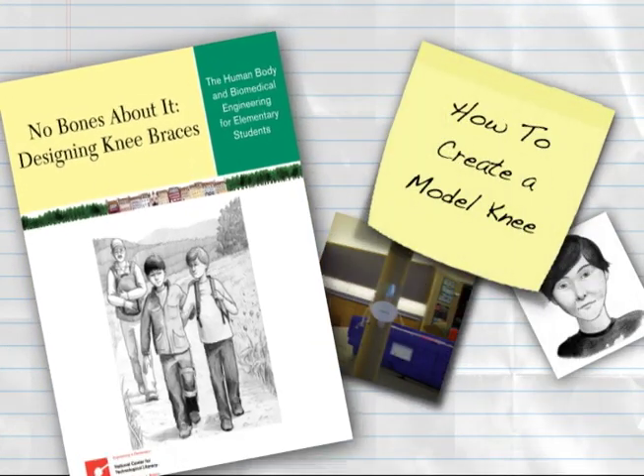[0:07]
This Engineering is Elementary digital how-to will demonstrate how to create the leg model for Lesson 3, Part 1 of No Bones About It, Designing Knee Braces.
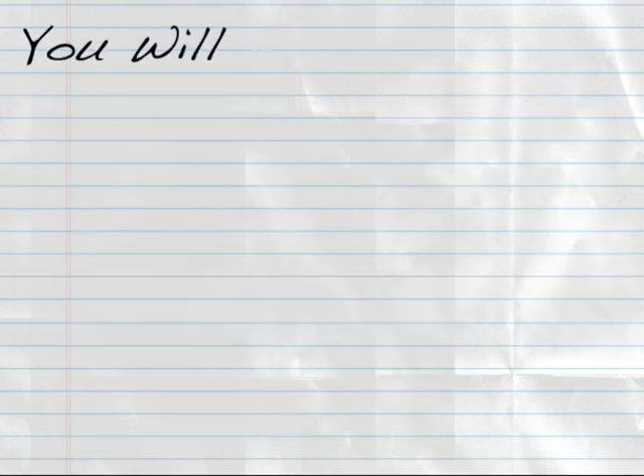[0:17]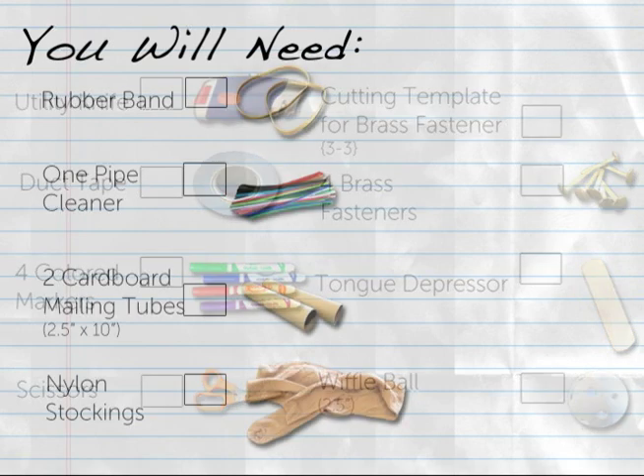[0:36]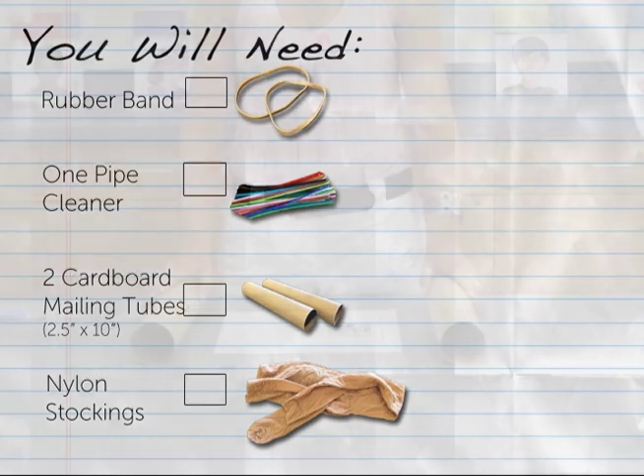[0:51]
For this how-to, you will need 1 utility knife, 1 roll of duct tape, 4 colored markers, scissors, 3-3 cutting template for brass fasteners, 4 brass fasteners, 1 jumbo craft stick or tongue depressor, a wiffle ball with a 2.5 inch diameter, 1 rubber band about 3.5 inches long when flattened, 1 pipe cleaner, 2 cardboard mailing tubes approximately 2.5 inches in diameter and 10 inches long, 1 knee-high nylon in a light color.
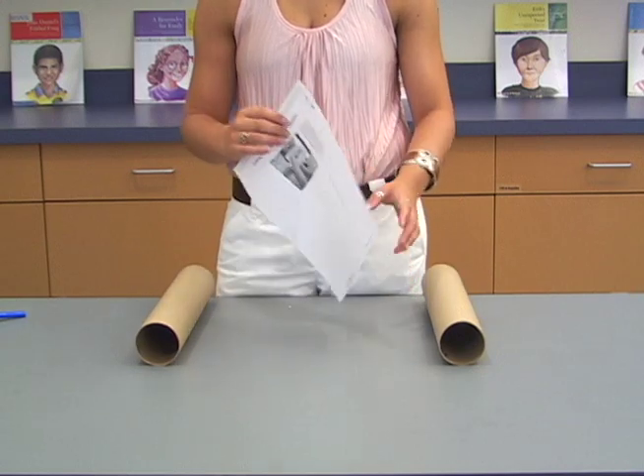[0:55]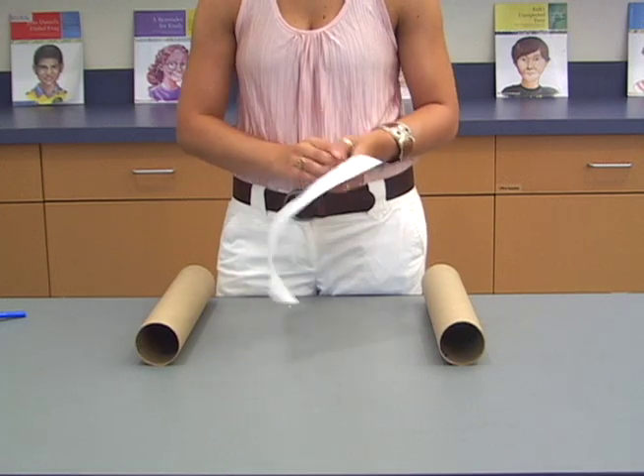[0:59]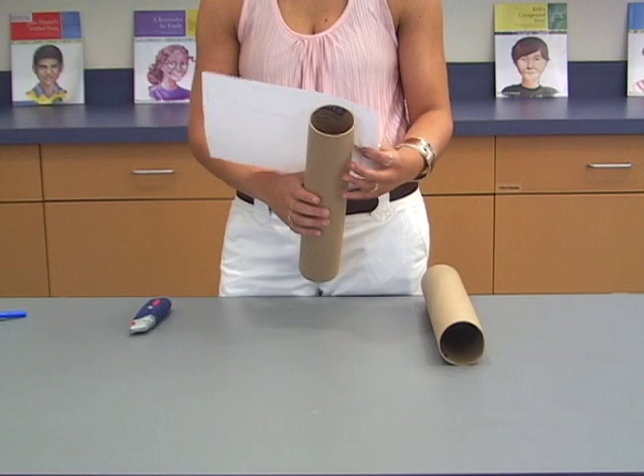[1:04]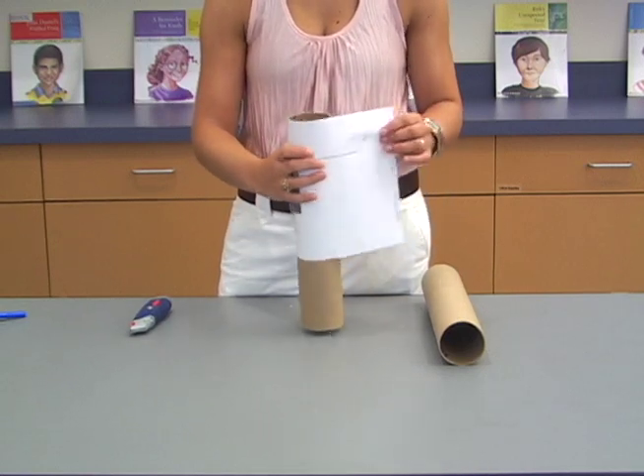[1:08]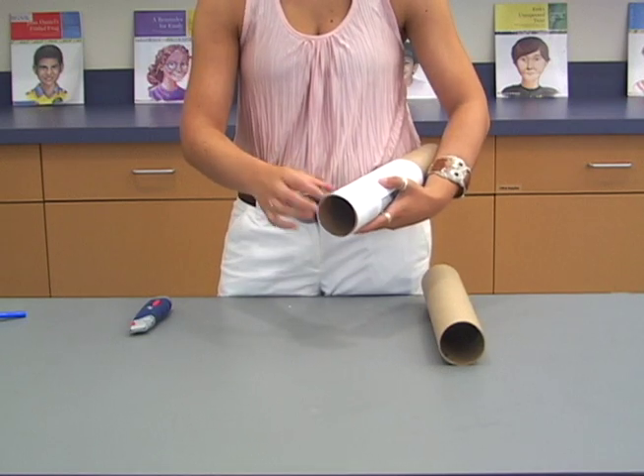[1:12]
Gather 2 cardboard mailing tubes. Use cutting template for brass fasteners 3-3 and a utility knife to poke 2 vertical slits in each cardboard tube. Align the side edge of the template with the top edge of one of the tubes and wrap the template around. If you would like, you can help hold it in place by securing it with a piece of tape.
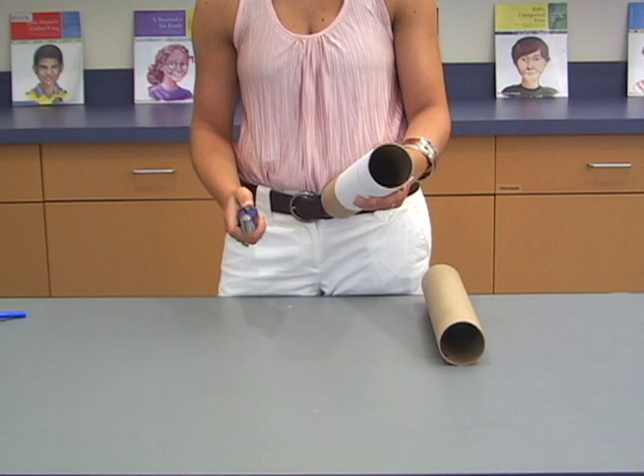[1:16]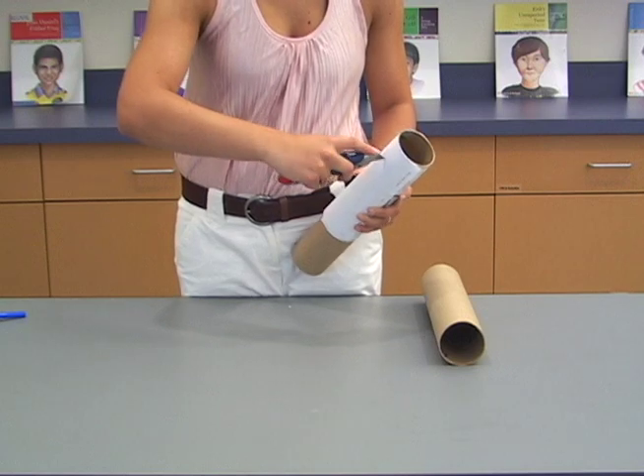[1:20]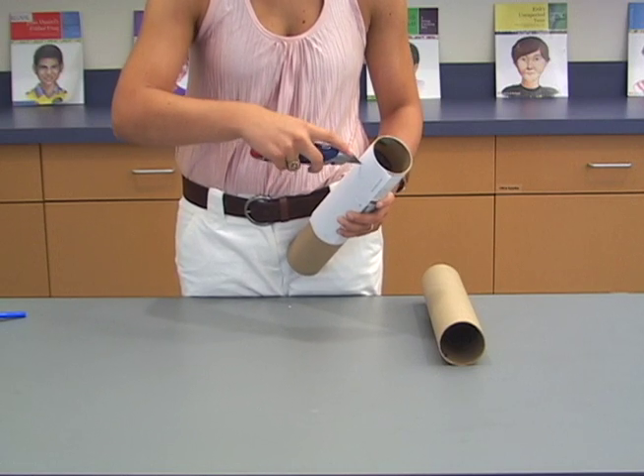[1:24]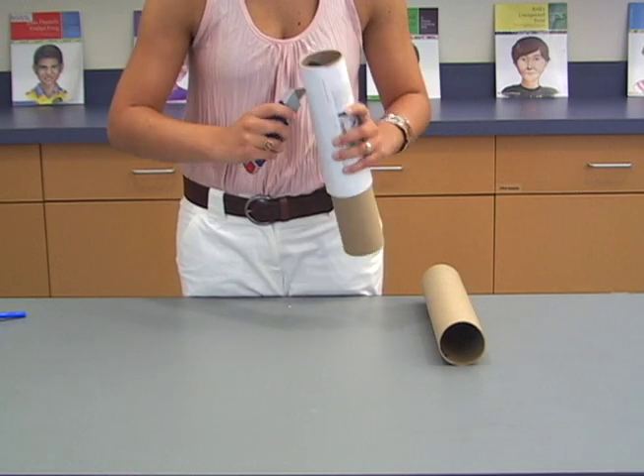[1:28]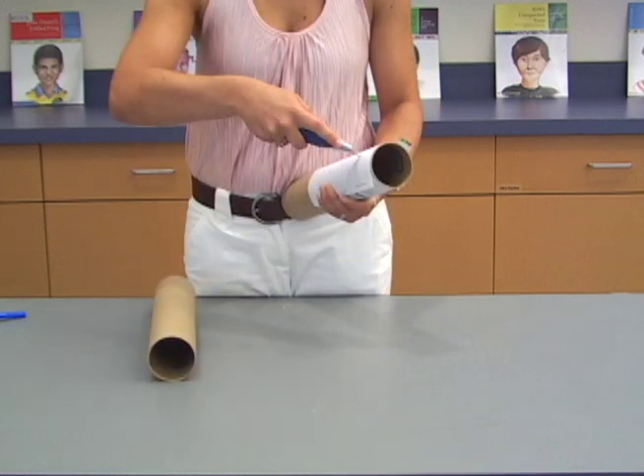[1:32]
Then, use the utility knife to poke slits through the marked boxes on the template. The slit should be just wide enough that the end of a brass fastener can be threaded through. Repeat the cutting process with the second tube.
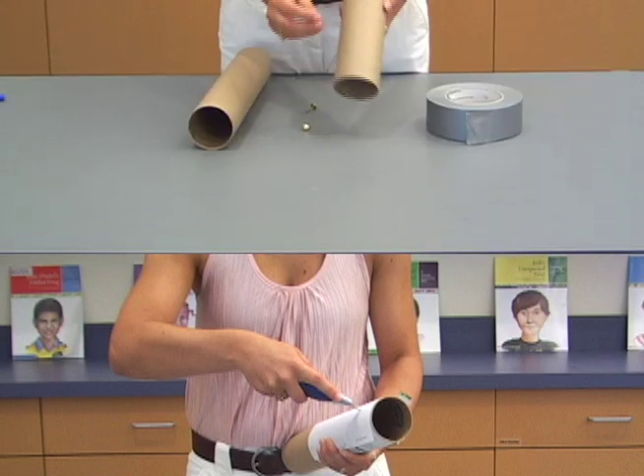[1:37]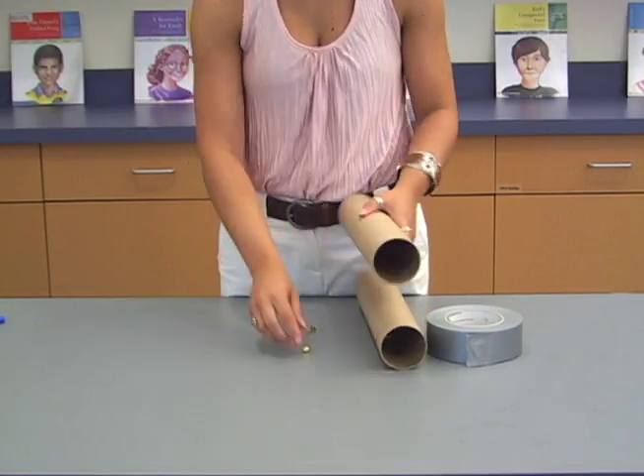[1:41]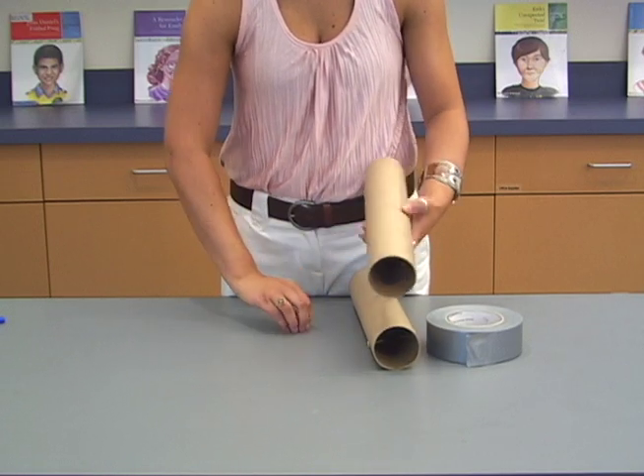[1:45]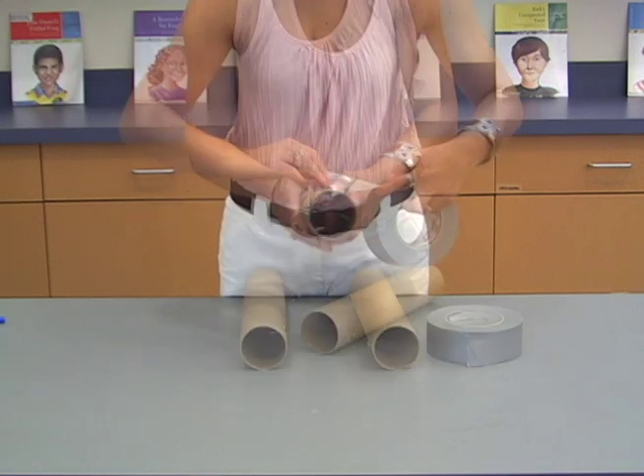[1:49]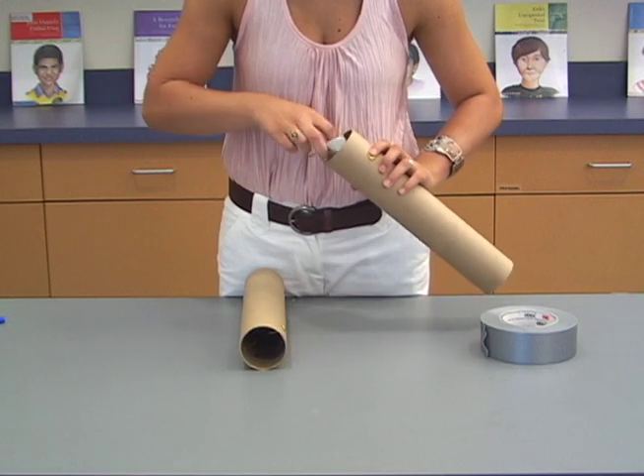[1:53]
Thread brass fasteners from the outside of the tubes through each of the 4 slits. Use duct tape to secure the ends of the fasteners on the inside of the tubes.
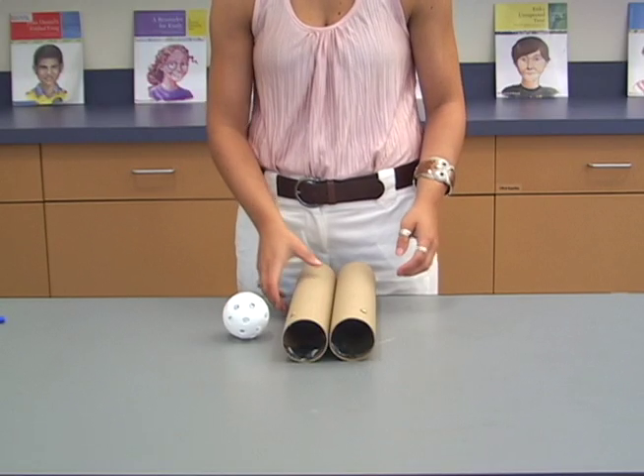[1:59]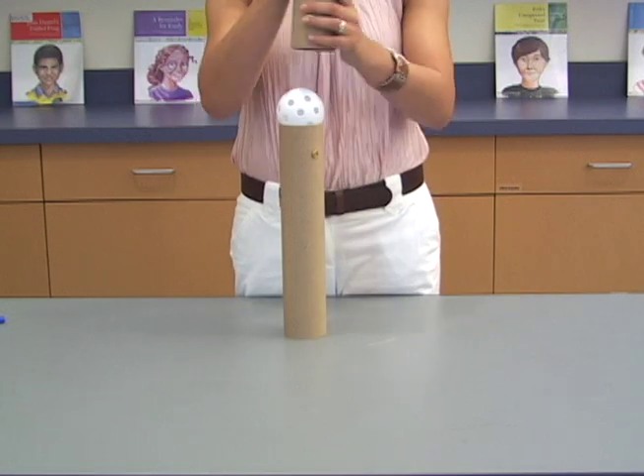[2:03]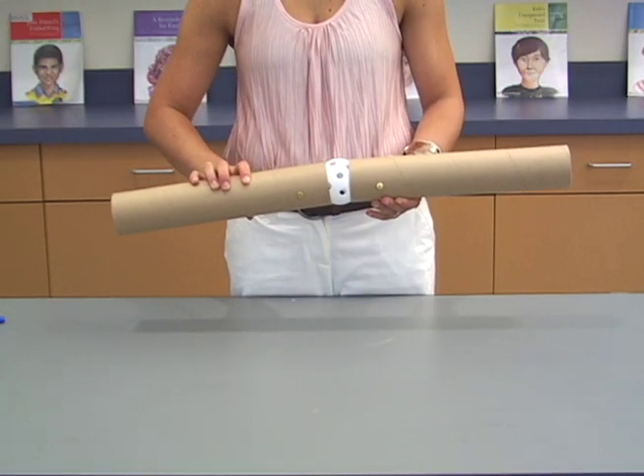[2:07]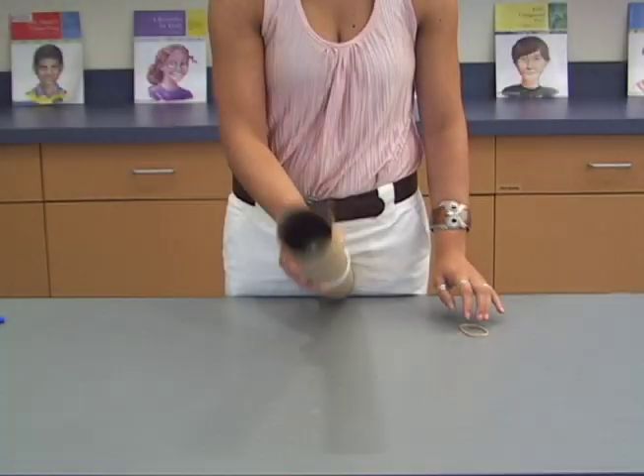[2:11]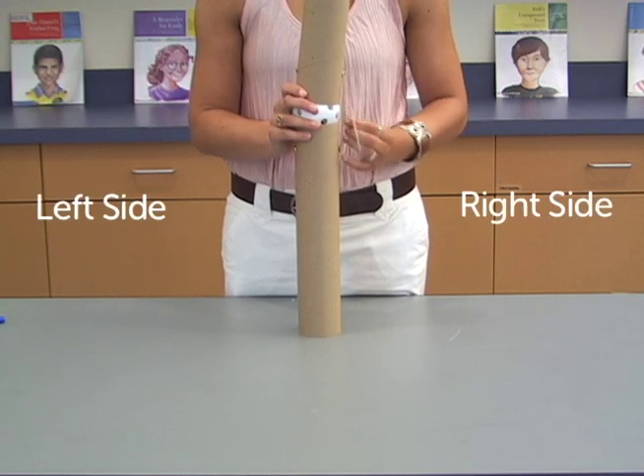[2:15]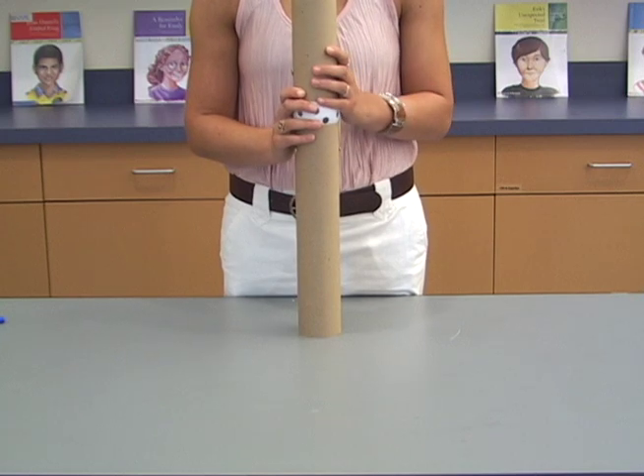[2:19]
Set the wiffle ball on top of one of the tubes, on the end closest to the brass fasteners. Place the second tube on top of the wiffle ball. Wind a rubber band around the 2 brass fasteners on the right side of the stack connecting the tubes. Note that this how-to is done facing you.
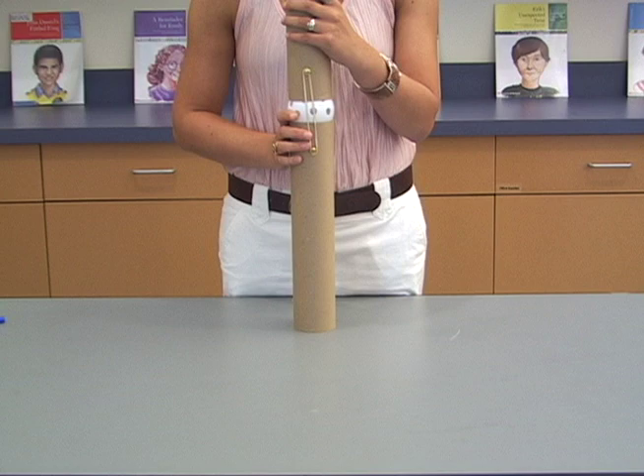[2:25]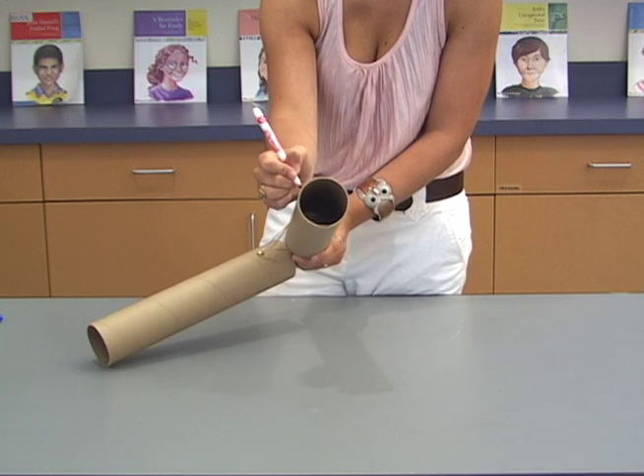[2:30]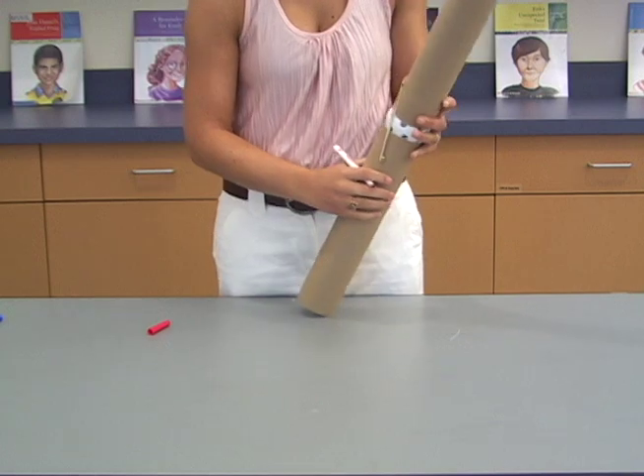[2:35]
Using a red marker, label the side of the leg inside. Use the red marker to put 2 dots on the model, 1 on the upper leg and 1 on the lower leg.
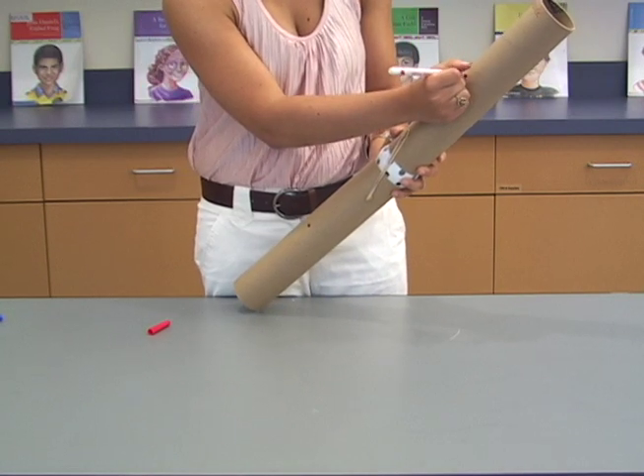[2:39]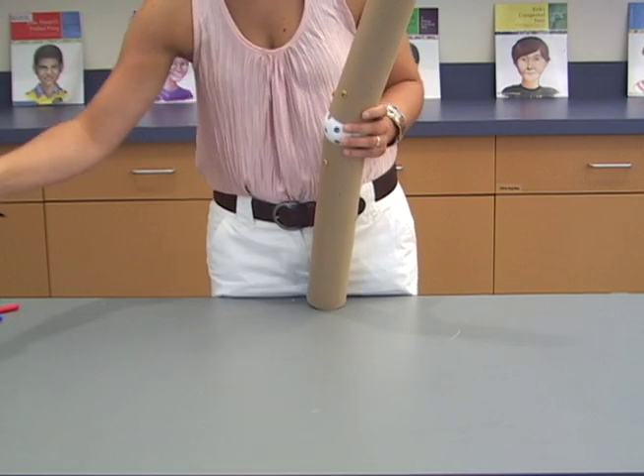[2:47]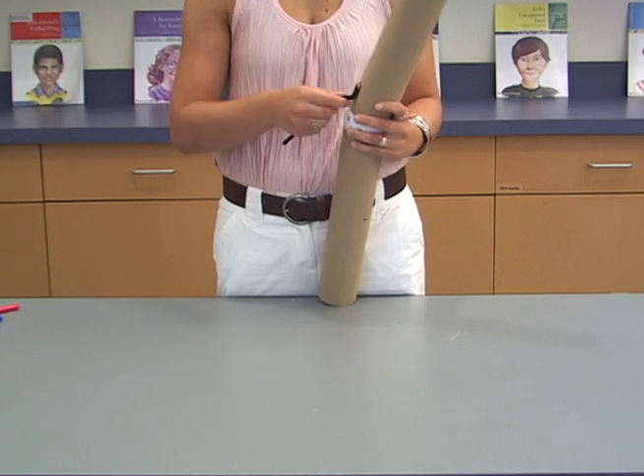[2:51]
On the other side of the stack, connect the 2 fasteners by circling a pipe cleaner around them and winding the ends of the pipe cleaner so it's very taut.
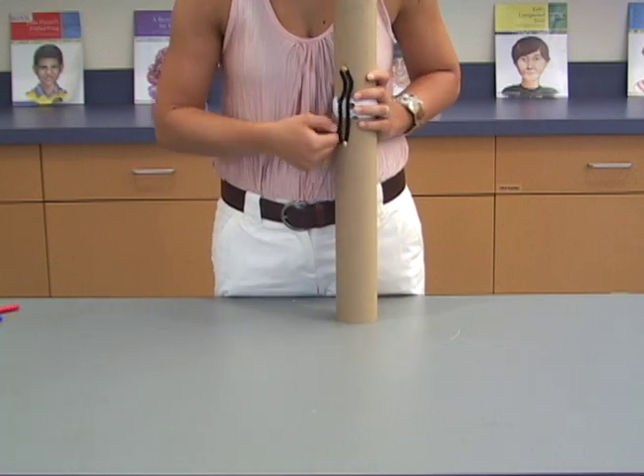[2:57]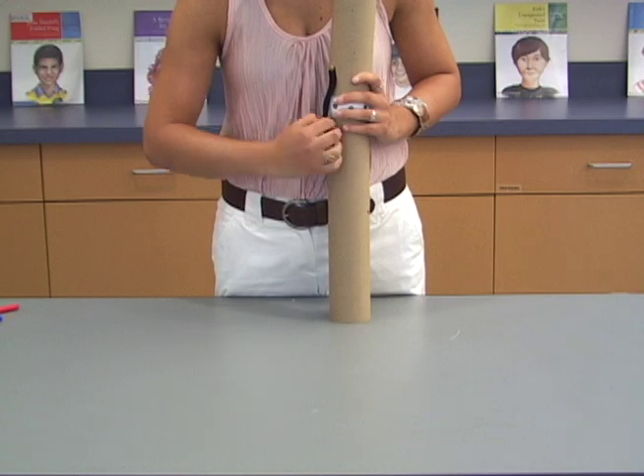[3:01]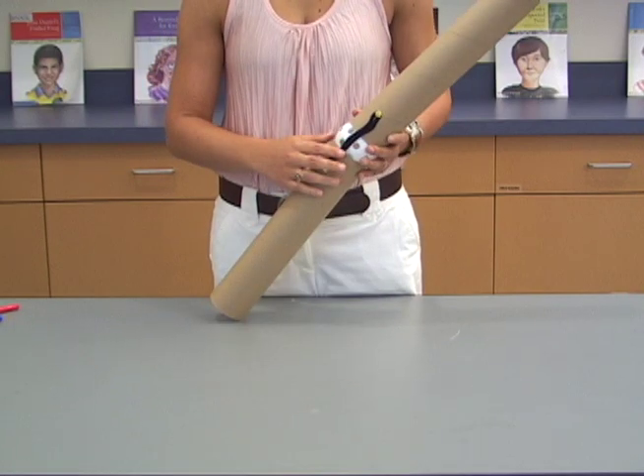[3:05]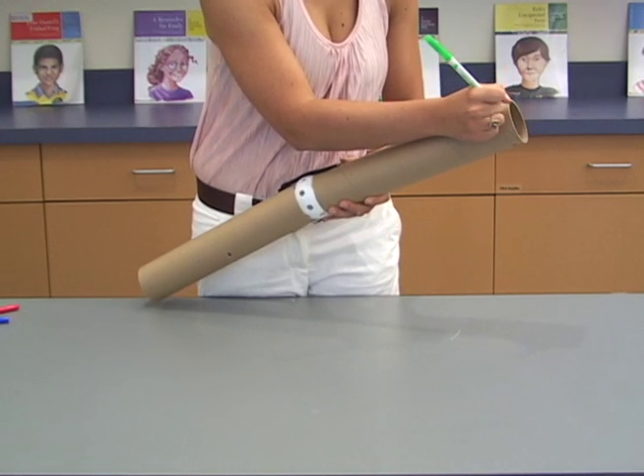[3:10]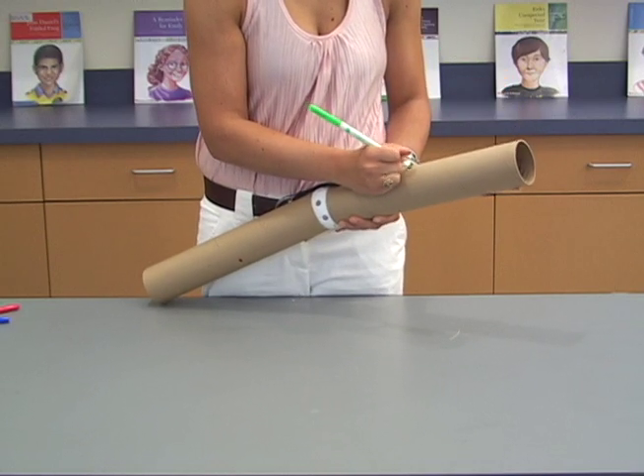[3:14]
Using a green marker, label this side of the leg outside. Use the green marker to put 2 dots on the model, 1 on the upper leg and 1 on the lower.
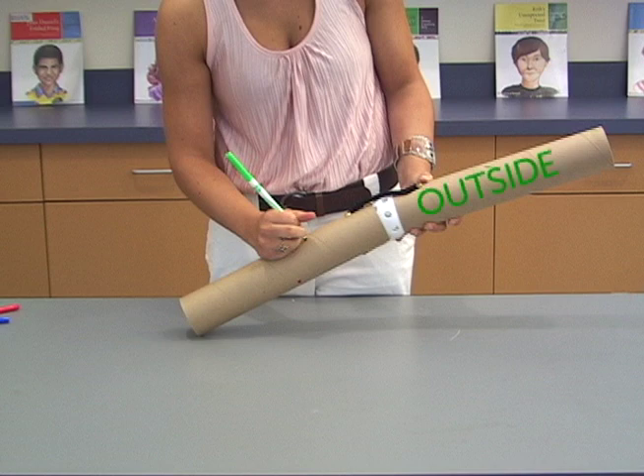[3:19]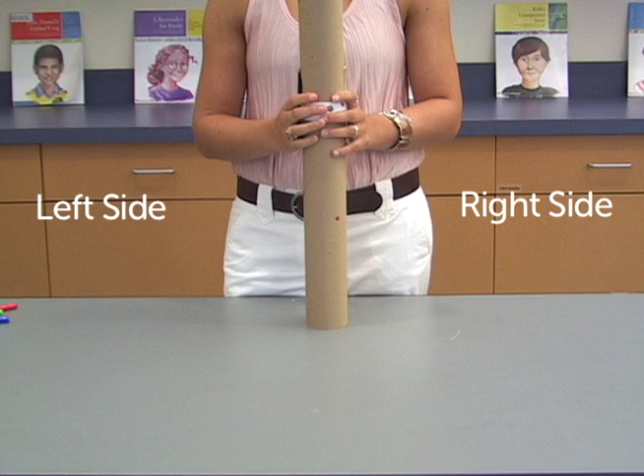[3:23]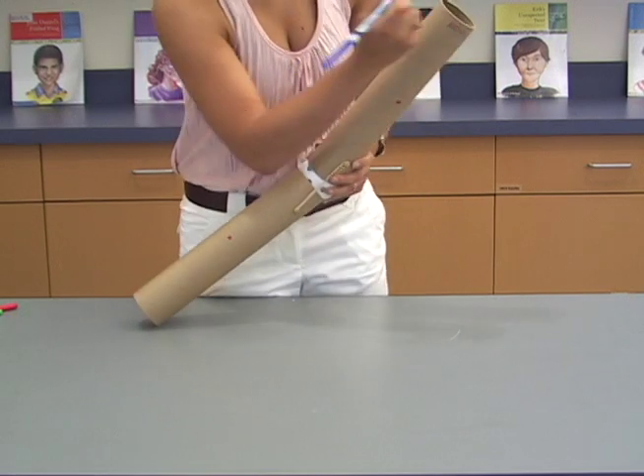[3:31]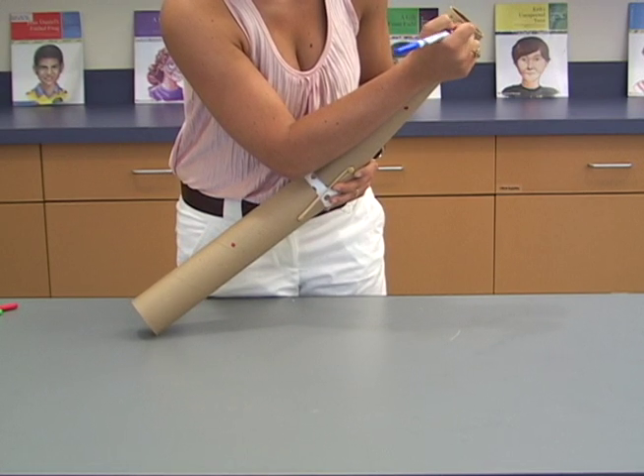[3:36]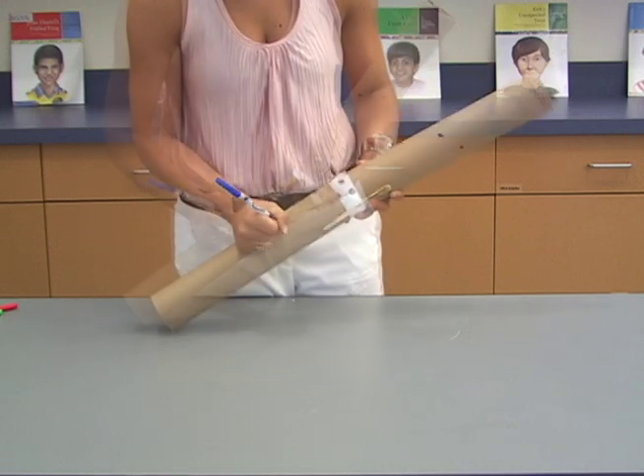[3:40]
Orient the model leg such that it matches the image shown. The single rubber band should be on your right and the pipe cleaner on your left. Using a blue marker, label the side facing you as the front and then put 2 blue dots on the model, 1 on the upper and 1 on the lower.
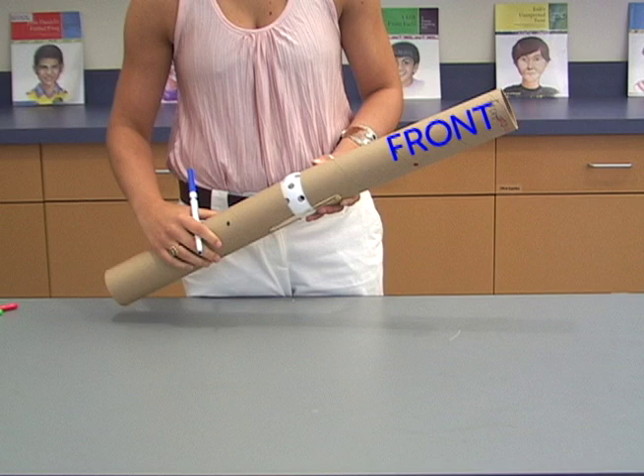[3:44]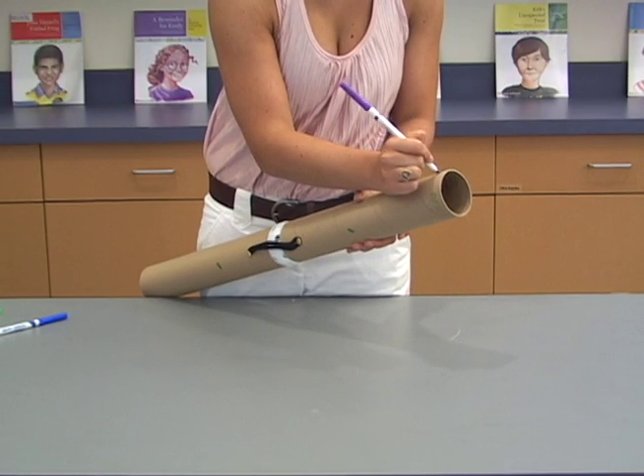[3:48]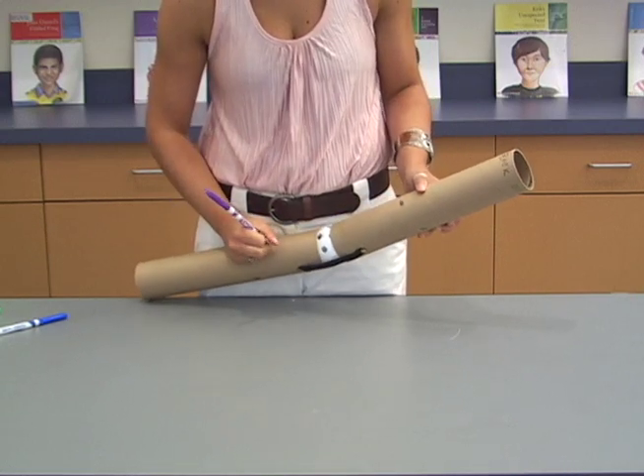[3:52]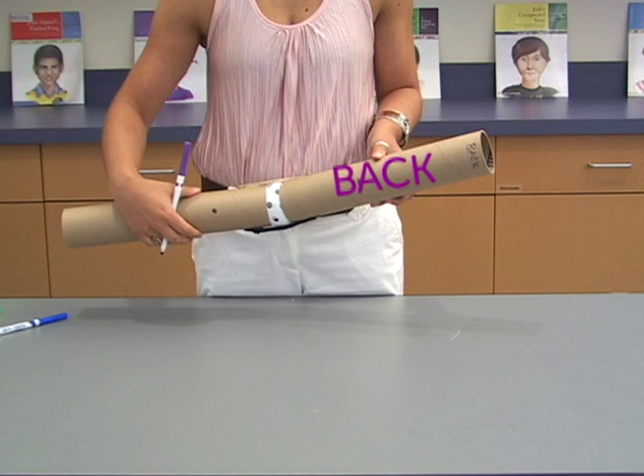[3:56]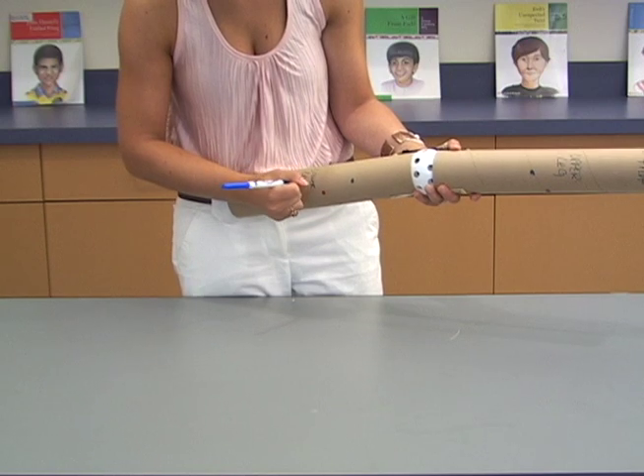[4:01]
Label the back of the model as back using the purple marker. Put 2 purple dots on the model, 1 on the upper and 1 on the lower leg. On the front of the model, label the top tube upper leg and the bottom tube lower leg.
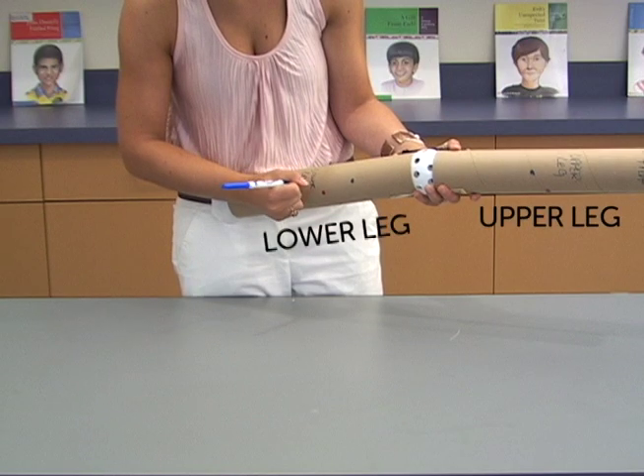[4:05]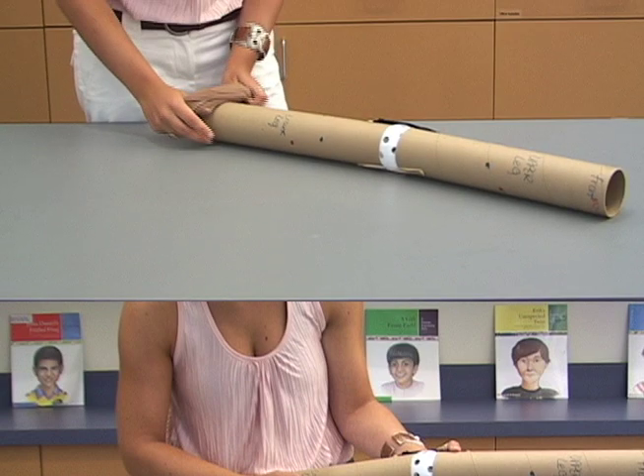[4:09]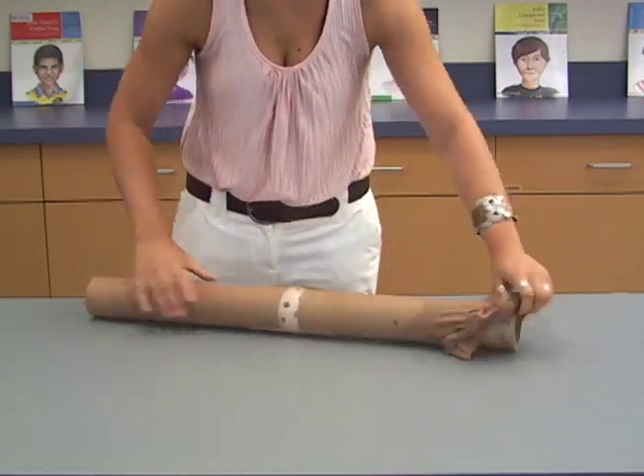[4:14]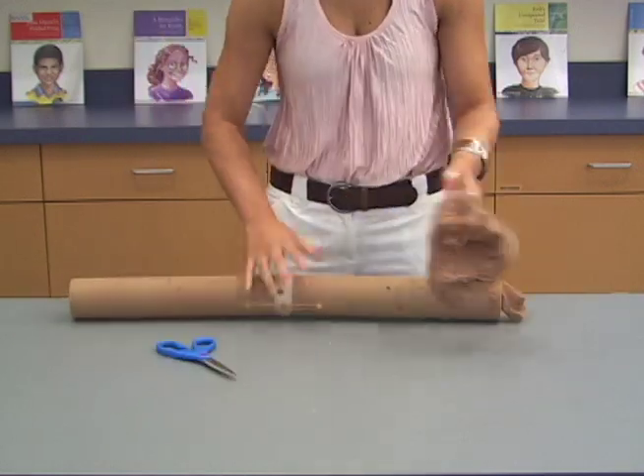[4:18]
Slide the entire model into a leg of the pantyhose or nylons. Tie the open end of the pantyhose so that the nylon tightly encases the model.
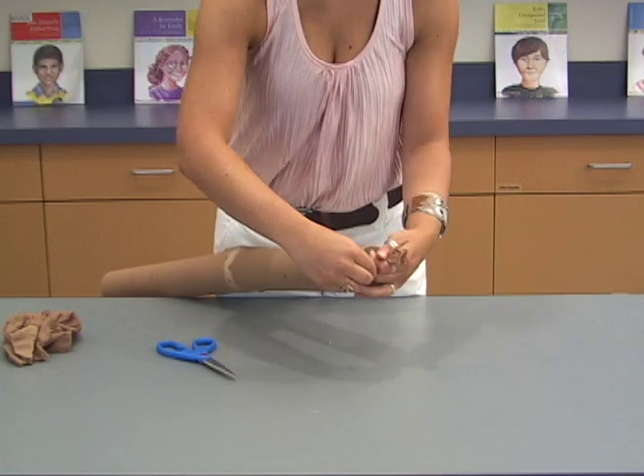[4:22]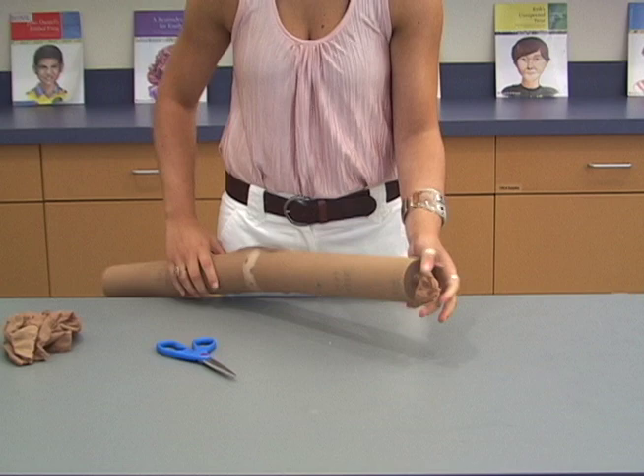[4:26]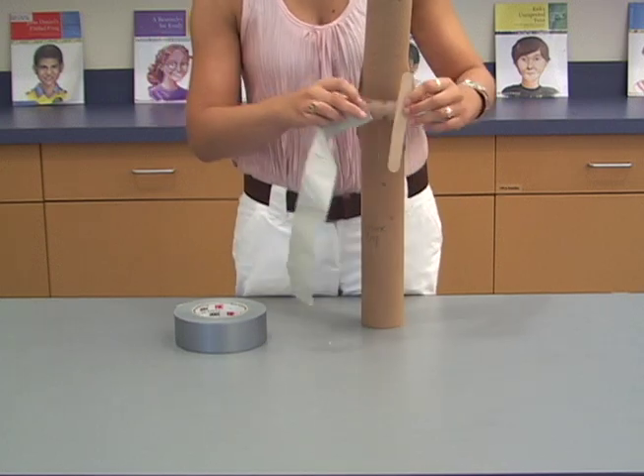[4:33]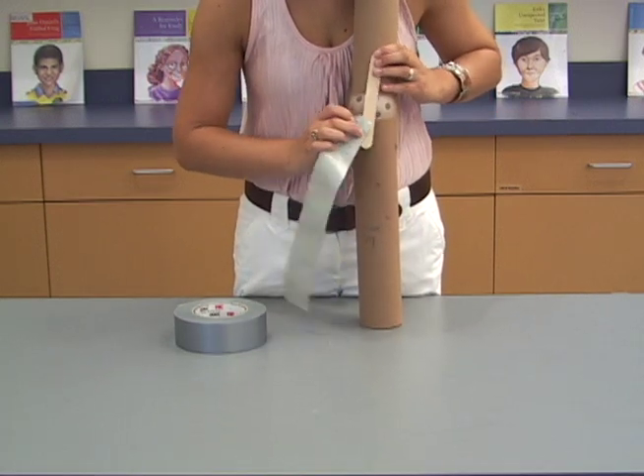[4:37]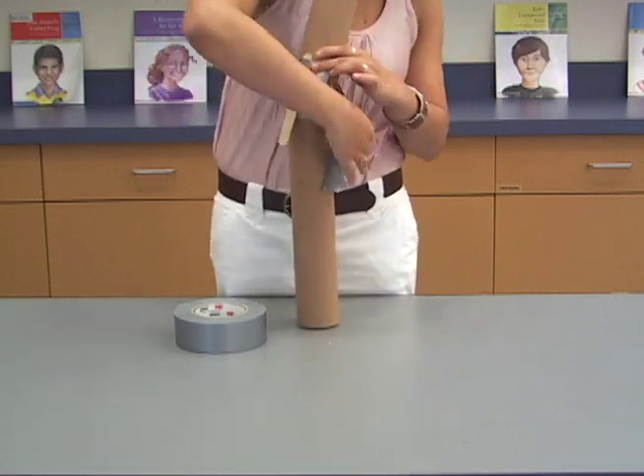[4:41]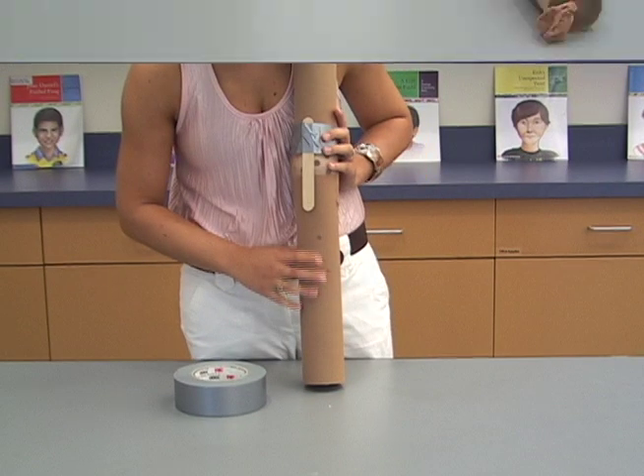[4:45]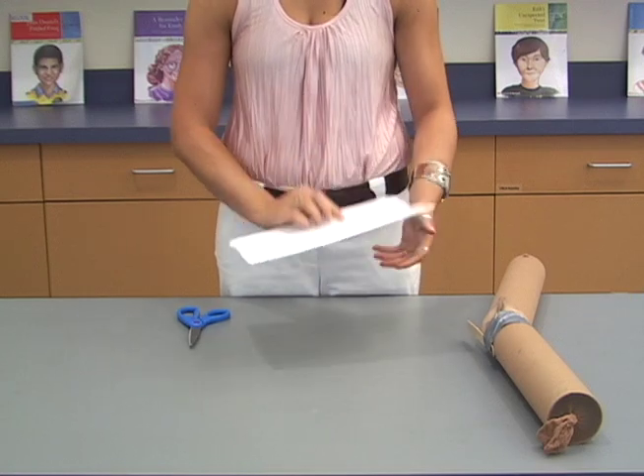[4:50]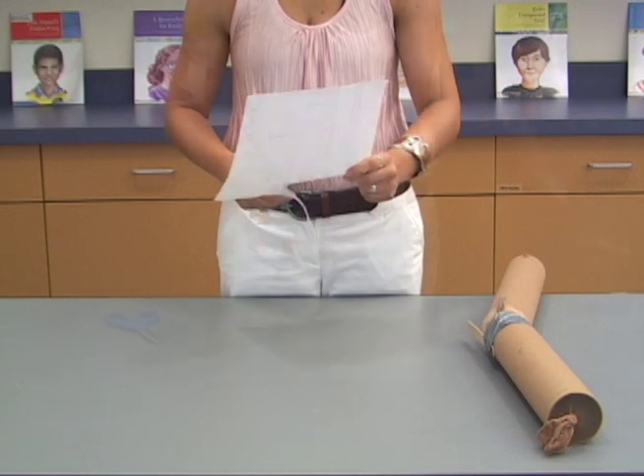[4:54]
Using a piece of duct tape, secure the tongue depressor to the top of the tube, vertically hanging down from the upper part of the model over the wiffle ball. Cut out the kneecaps from kneecaps 3-4 and tape 1 to the tongue depressor. You may wish to laminate the kneecap.